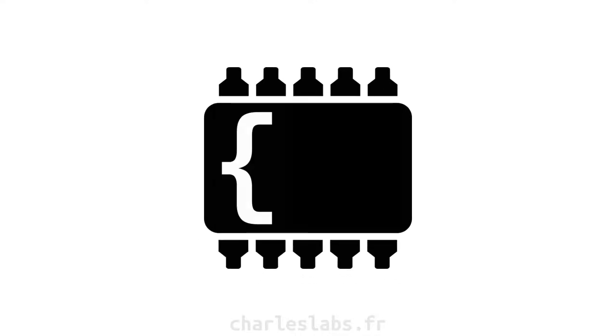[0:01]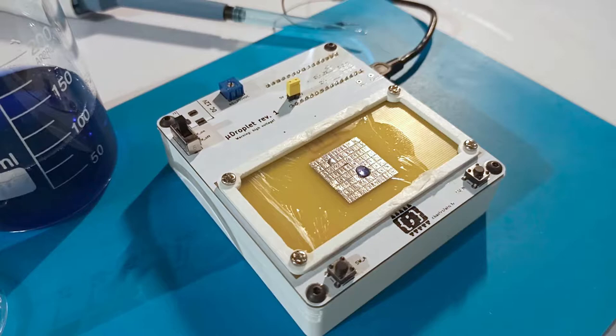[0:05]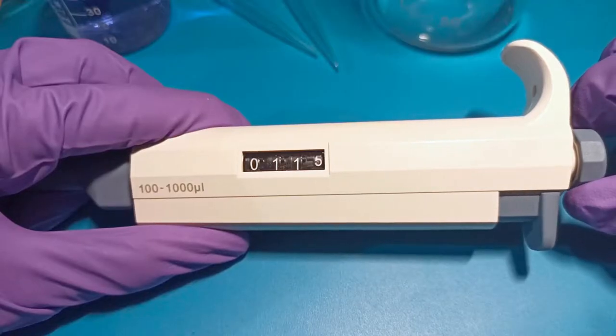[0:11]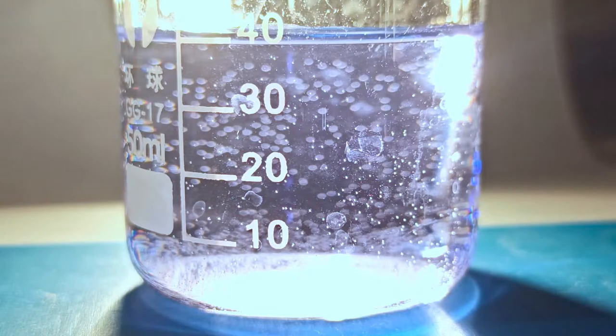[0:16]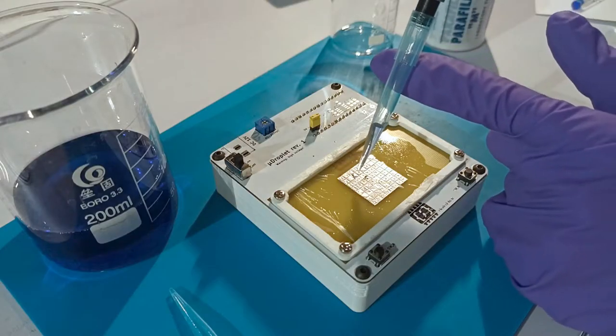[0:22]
This is µDroplet, an open-source platform to experiment with microfluidics. Microfluidics is an area of research based on the manipulation of small fluid volumes, on the order of microliters or less. It has gained traction in the field of biology, its main application being to create a so-called lab on a chip.
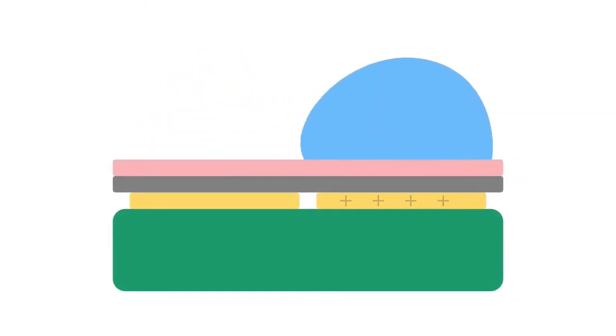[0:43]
The underlying physics is the electrowetting effect. Droplets under an applied voltage tend to reduce their contact angle with a surface. With this effect, we can move the droplet on a hydrophobic film using surface tension, as shown in this animation. We can even create complex structures, such as reservoirs, sinks, etc.
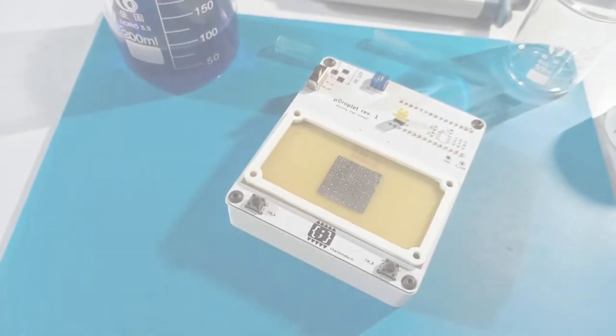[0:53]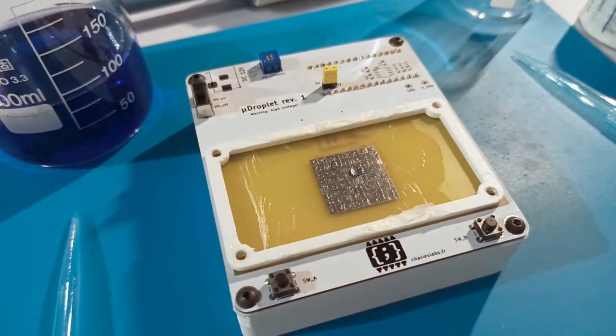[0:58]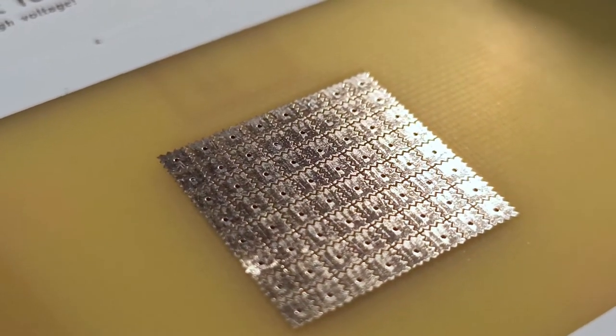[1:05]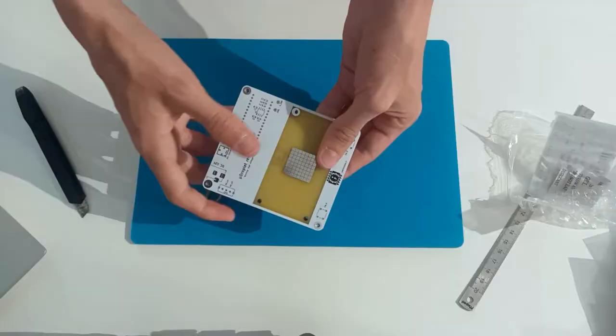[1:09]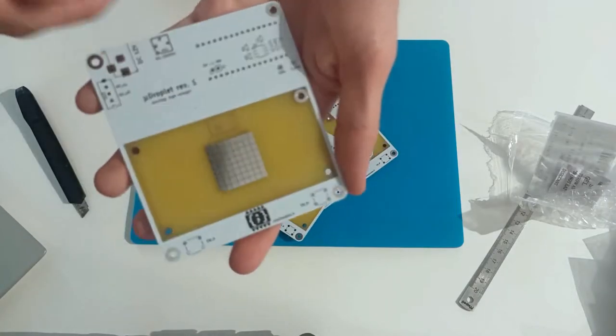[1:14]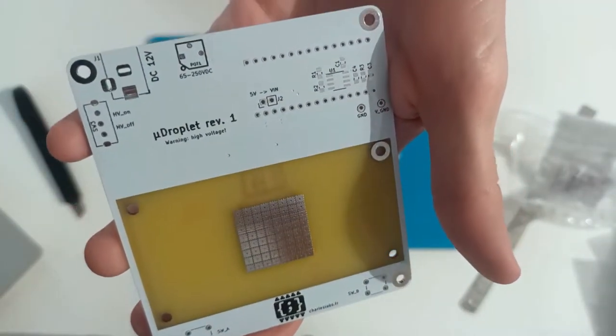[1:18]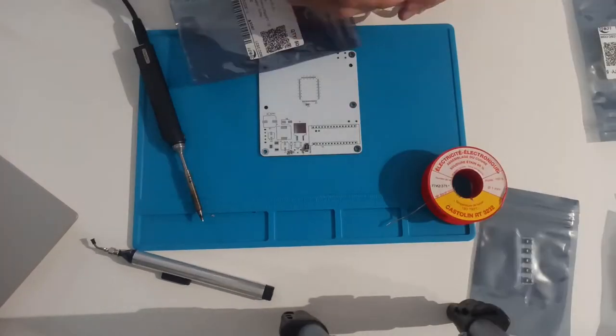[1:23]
µDroplet electronics are inspired by GaudiLabs' OpenDrop platform and the extensive research they make publicly accessible. It features an 8x8 array of electrodes driven by an adjustable high voltage, from 80 to 280 volts DC. I designed this PCB on KiCad and manufactured it with the JLCPCB prototyping service. Overall, the electronics BOM cost is under $40.
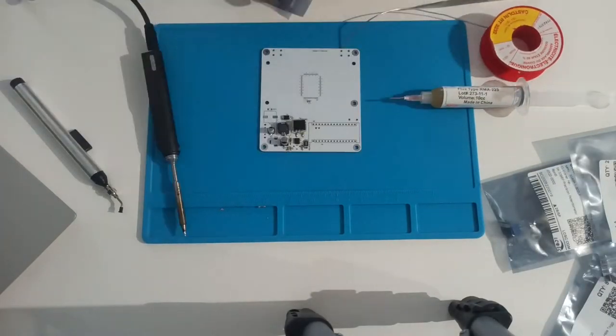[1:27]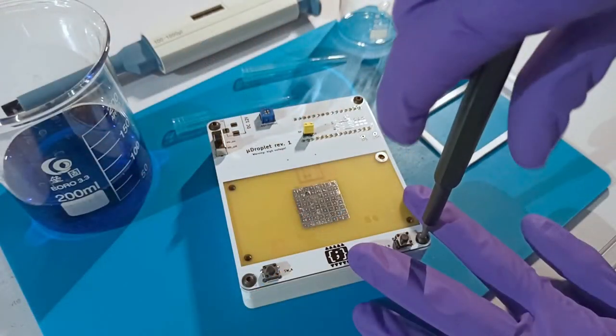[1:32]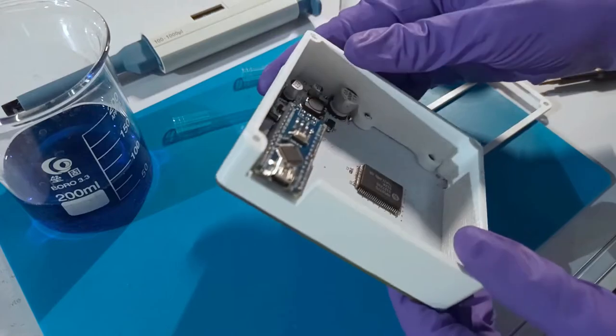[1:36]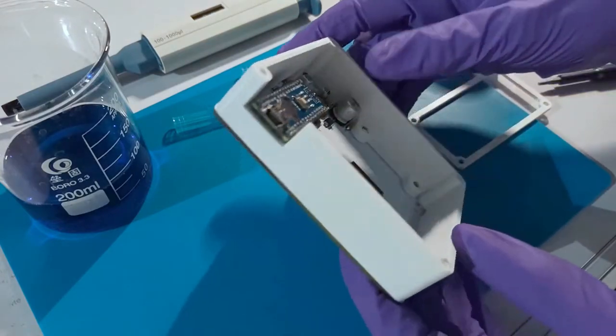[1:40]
It is controlled by an Arduino Nano microcontroller board with a high voltage driver. Software-wise, the Arduino firmware simply turns on or off electrodes in response to commands from the Processing-based control program. I 3D printed the base and the dielectric frame in PLA.
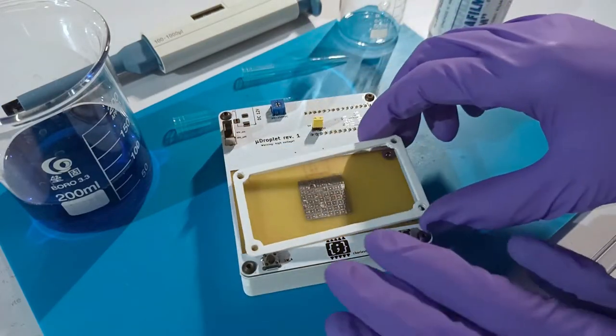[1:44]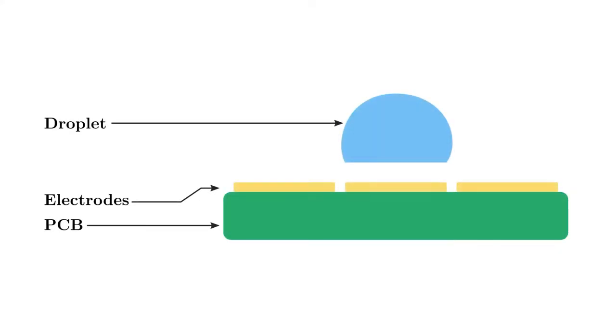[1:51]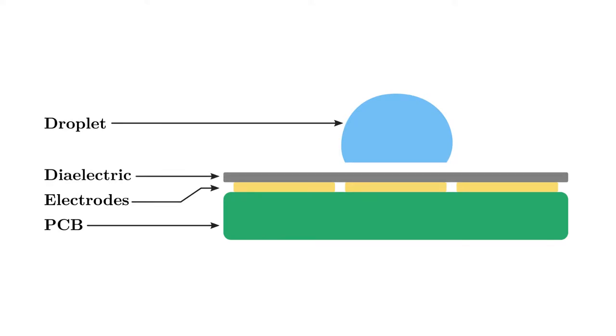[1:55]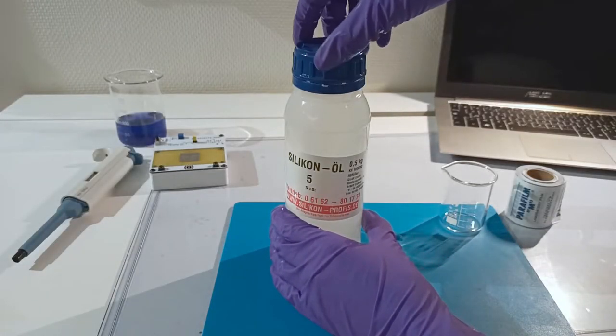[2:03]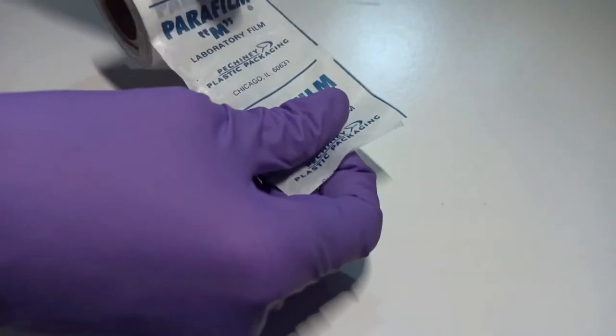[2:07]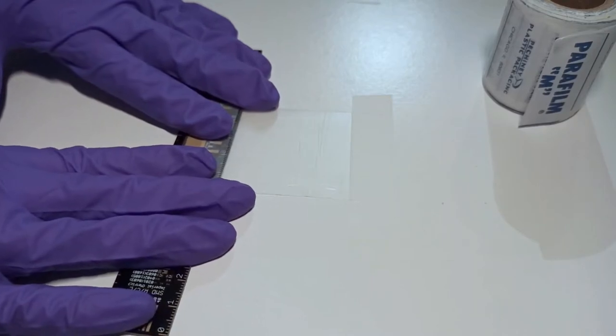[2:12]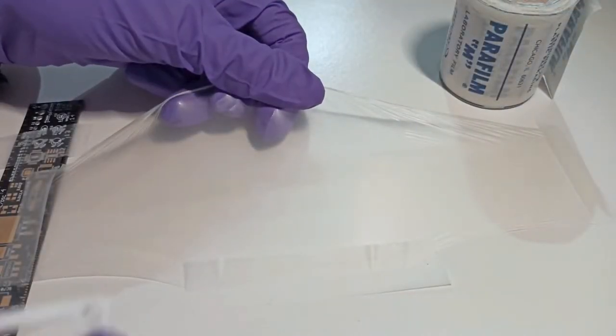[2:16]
To prepare the electrodes for electrowetting, we need to add an insulating layer and a hydrophobic layer. Many materials can be used for both, as described in papers, but I'll show the simplest setup here, using low viscosity silicone oil and standard parafilm. First, we want to get the thinnest layer of parafilm we can make. To do this, we need to stretch it in both directions.
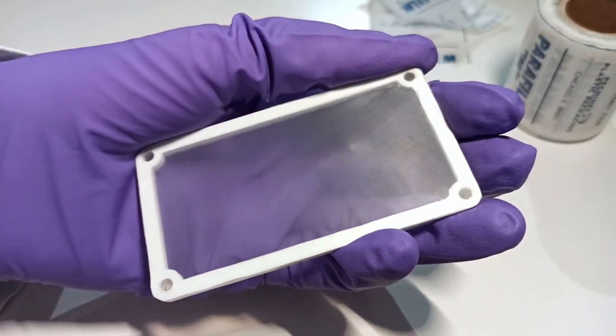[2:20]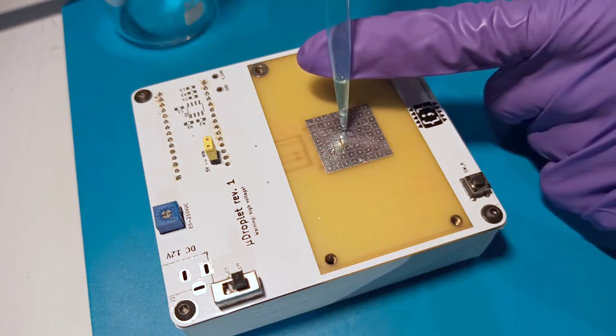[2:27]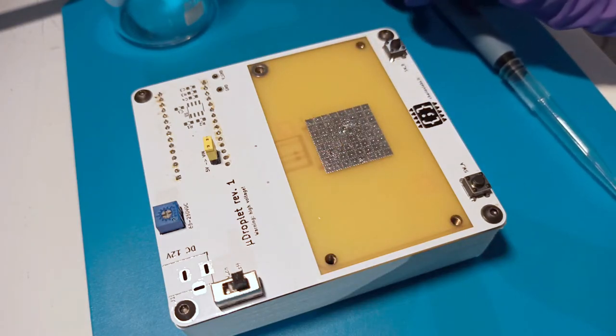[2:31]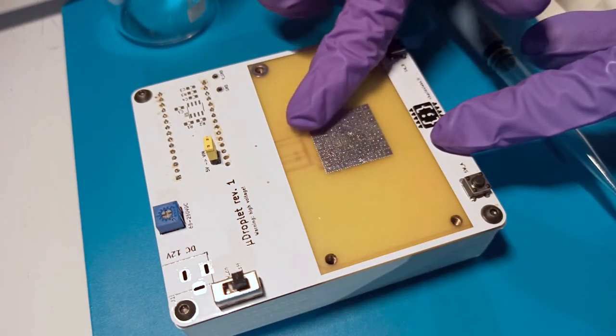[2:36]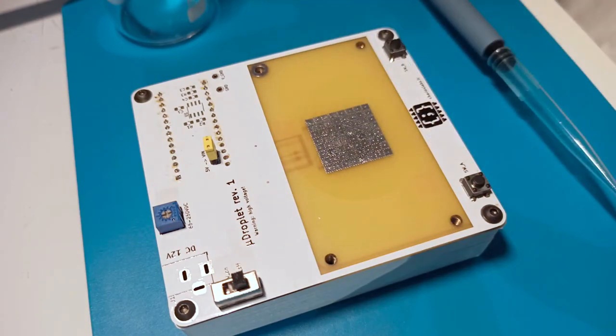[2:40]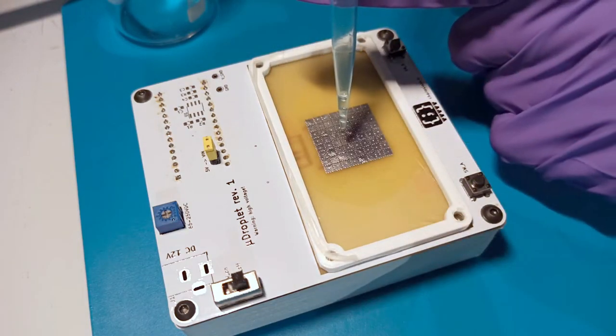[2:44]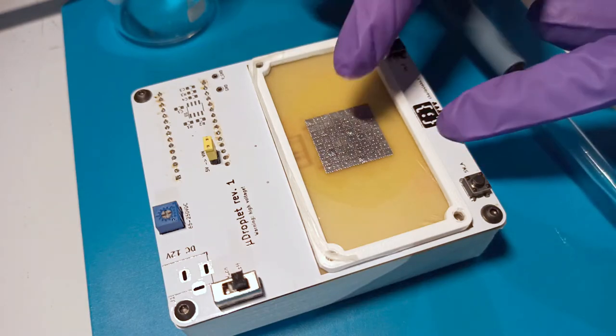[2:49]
The 3D printed frame helps keep the film stretched and prevent wrinkles from occurring. Then, I apply about 15 microliters of oil directly on the electrodes and spread it with my finger. This prevents air from getting stuck between the film and the electrodes. Next, we can set the frame on top of the array. Finally, we put another drop of oil on the parafilm to make it hydrophobic.
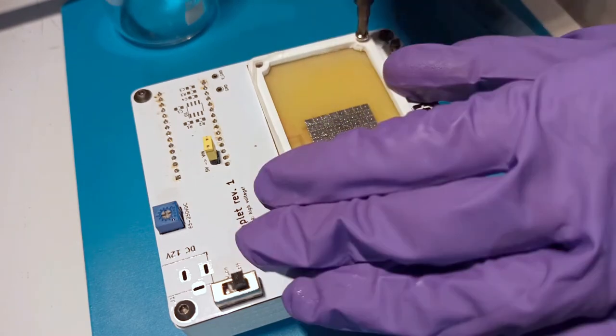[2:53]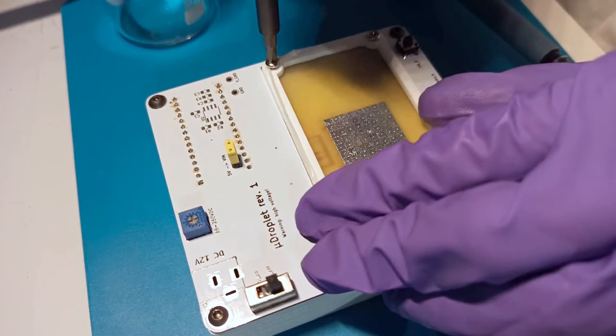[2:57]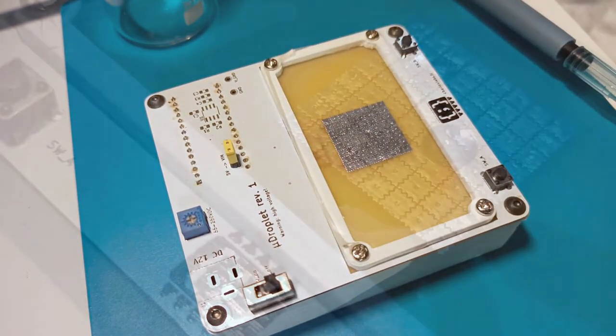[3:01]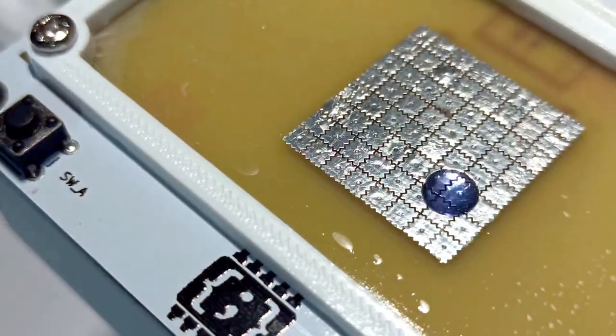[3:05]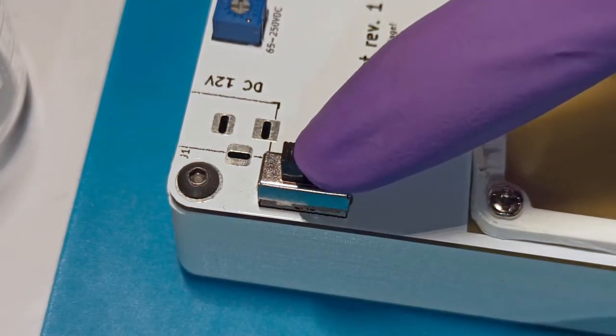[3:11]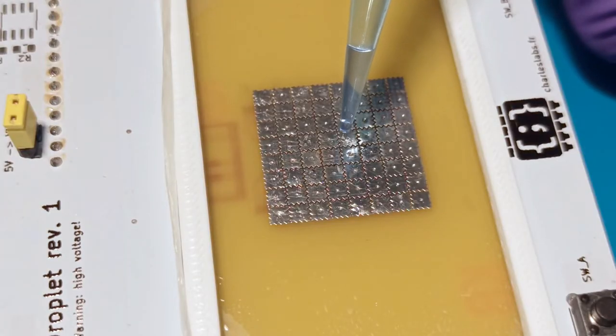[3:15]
Four screws hold the frame in place. The array is now ready to use, insulated with a very thin film of dielectric, and made hydrophobic thanks to the oil. To actually use the device, we can now turn on the high voltage, launch the control software, and add drops of fluid on the electrodes.
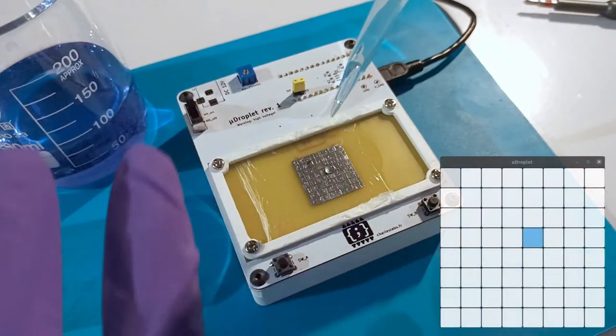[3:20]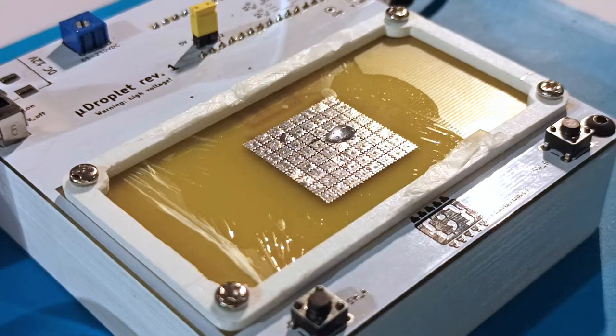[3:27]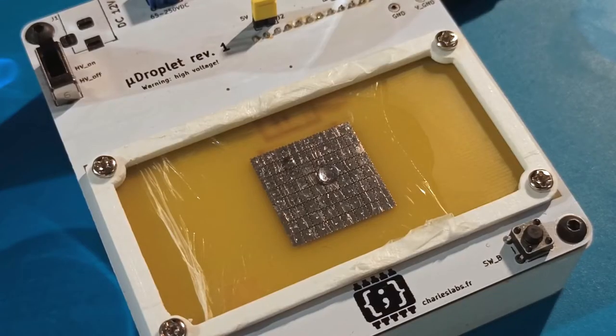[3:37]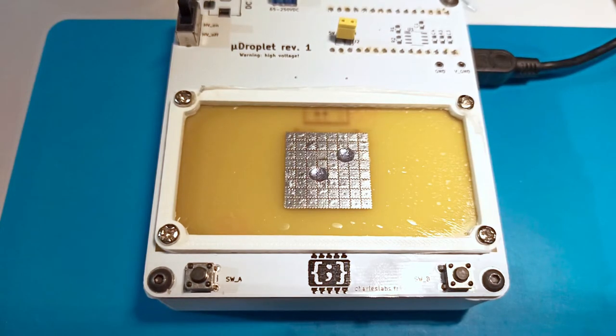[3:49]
In these clips, I put a single droplet and program the device so that it follows a repeating rectangular pattern. Here, the voltage is quite high, about 200 volts. This ensures reliability and consistency, but for real applications, we probably need lower voltages. It is attainable with better materials, such as micrometer thick ETFE sheets. Of course, we can also control multiple drops of fluid concurrently.
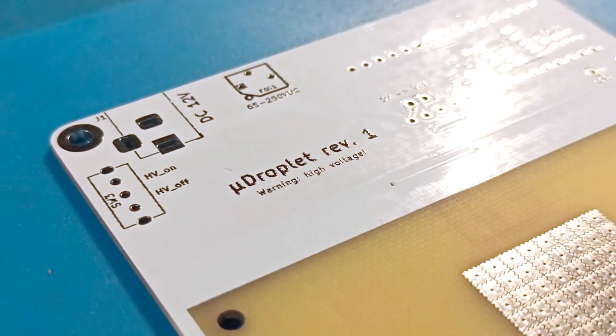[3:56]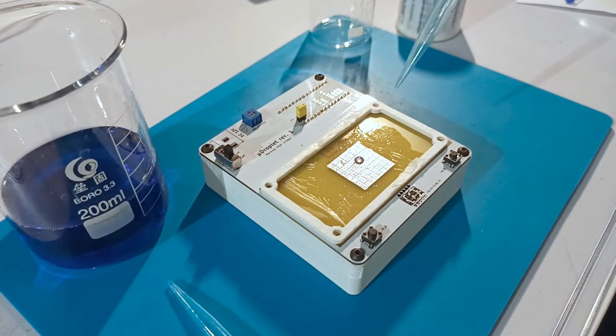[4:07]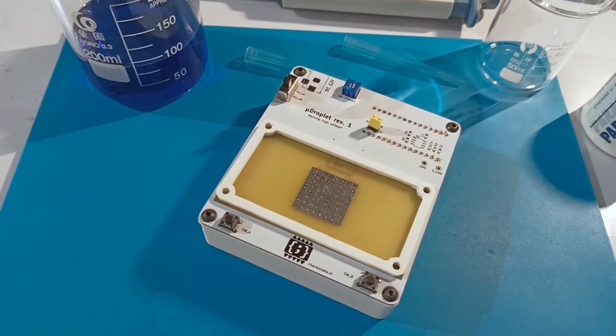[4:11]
µDroplet is a simple learning platform to experiment with electrowetting. I achieve fast and reliable control of the droplets in the open configuration, albeit using high voltage. To go further on this topic, I'd recommend checking out Godilab's website and YouTube channel.